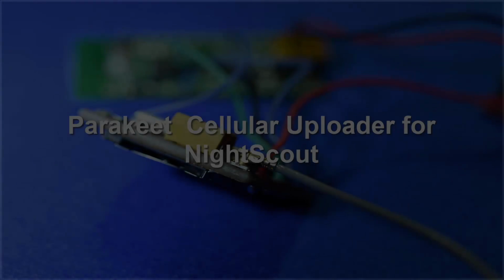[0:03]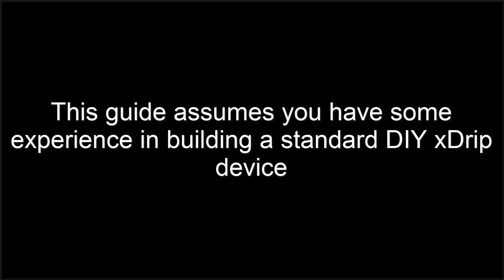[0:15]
In this video, we'll be making a Parakeet cellular uploader for NightScout. The guide assumes that you built an xDrip before and programmed the Wixel. The main resource page has everything you need, step-by-step instructions.
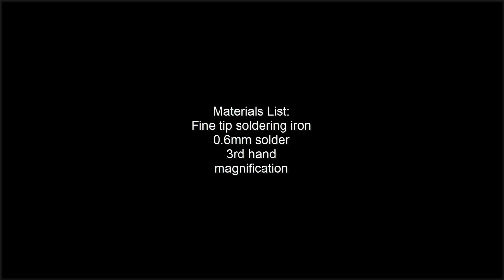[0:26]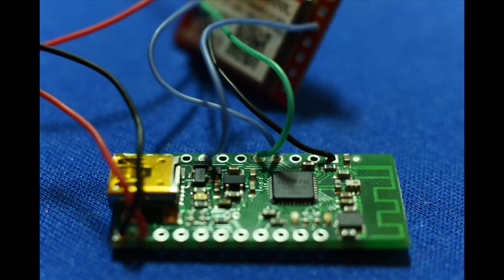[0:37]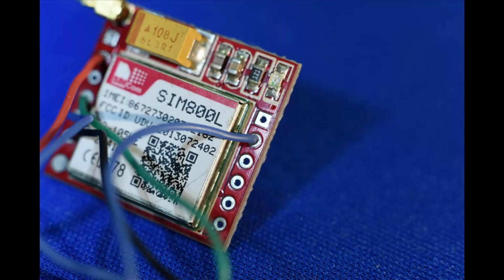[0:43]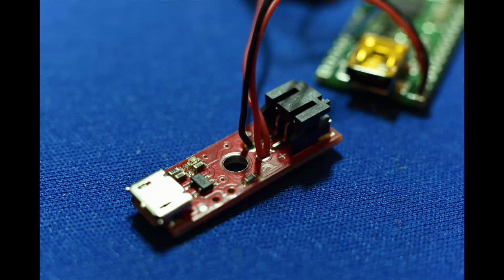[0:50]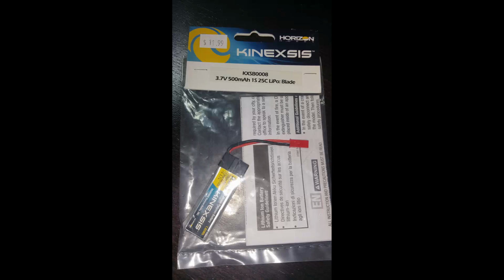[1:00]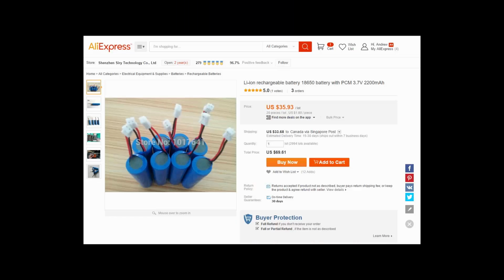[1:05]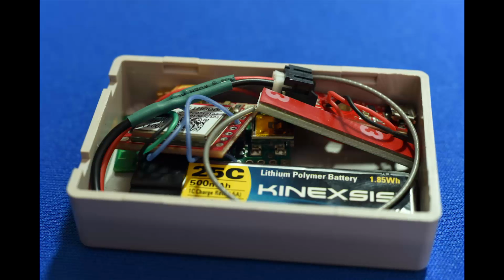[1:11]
You'll need all the soldering materials, as well as the parts of the Parakeet. And that includes the Wixel, the GSM module, which you can get from eBay, a LiPo charger, either from SparkFun, or you can use the one from Adafruit. Then you'll need a battery that can handle a 2-amp draw over the entire discharge cycle of the battery. The one I used is from a quadricopter, and we've also ordered others from AliExpress that are lithium ion. Then you'll need a box to put it in, tape it down or glue it down.
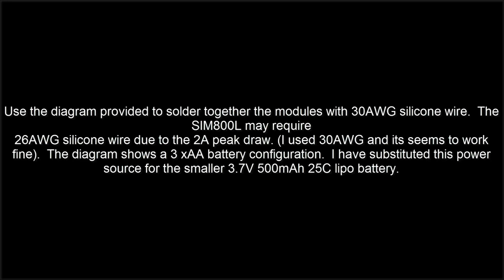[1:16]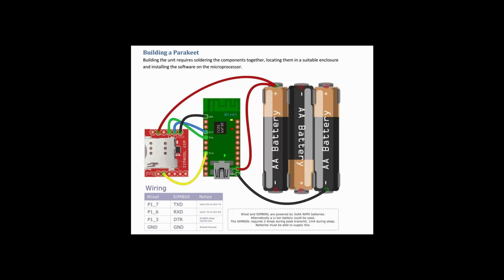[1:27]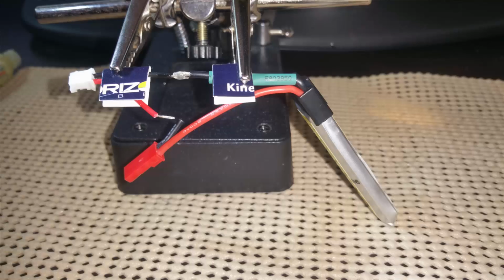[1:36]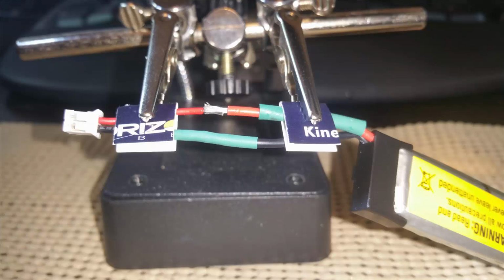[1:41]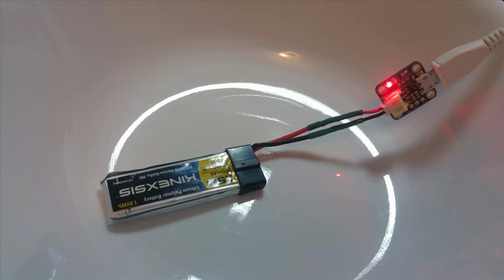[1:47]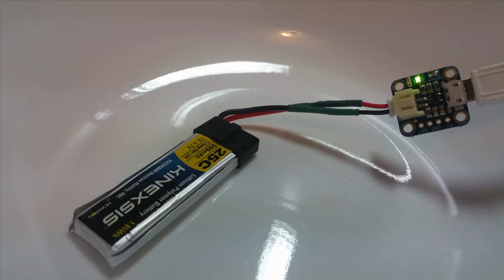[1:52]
Next, we're going to wire everything together using 30 gauge wire and solder it according to the diagram provided. When we do the battery, we want to splice the connections, but do one at a time, solder the connections, and have shrink wrap tubing to cover those connections so that nothing shorts out. After that, we want to test the battery by charging it in a fireproof area to make sure the battery doesn't heat up, or the wires, or the charger itself, and to see that it will charge up completely.
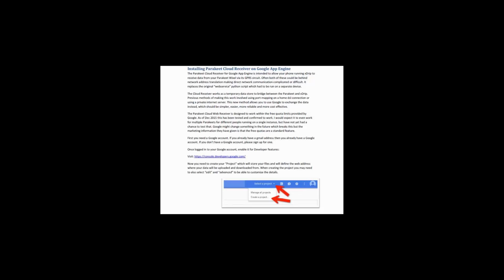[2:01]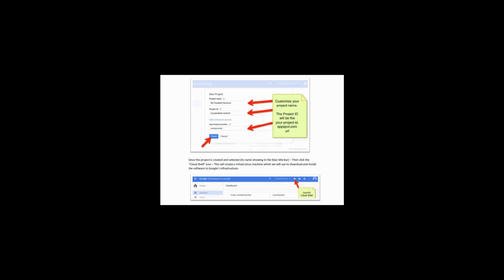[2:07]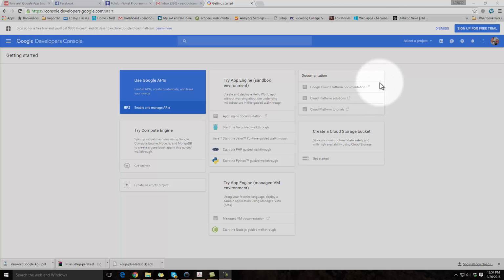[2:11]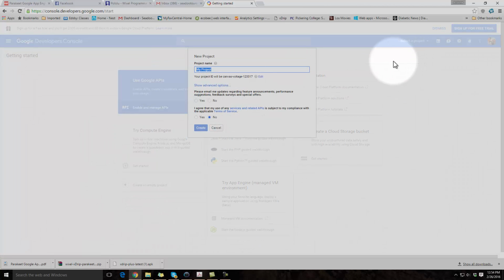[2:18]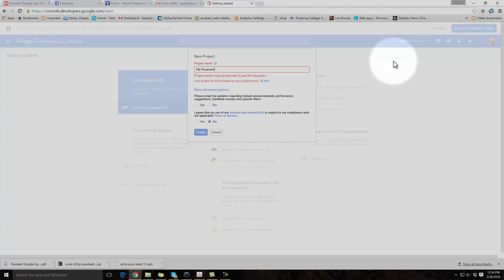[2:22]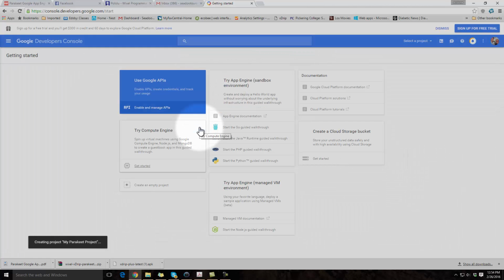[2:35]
Next up, we'll go back to the configuration pages to set up the cloud receiver on Google App Engine. Make sure you're signed into your Google account first. The cloud receiver works as a temporary data store to bridge between the Parakeet and the xDrip Plus app. Once you're in, you're going to create a project and give it a name. In this case, it's My Parakeet Project. You don't want the updates, and you do agree, and then create. After a few seconds, in the blue bar, you'll see My Parakeet Project show up.
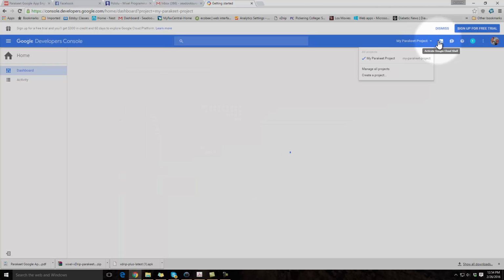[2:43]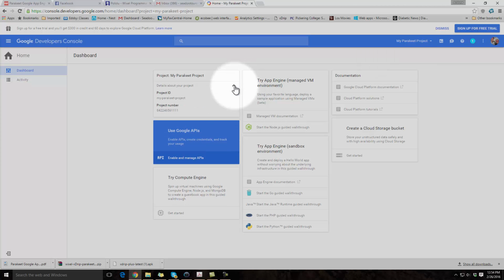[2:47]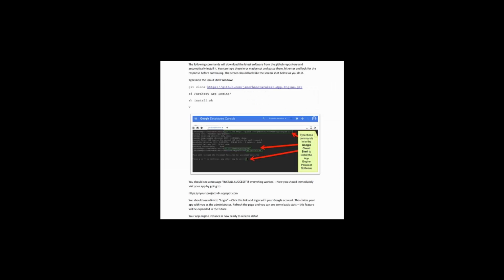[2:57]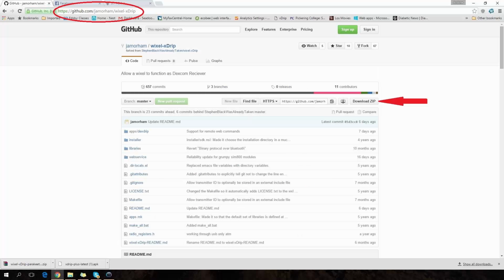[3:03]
Once that happens, you'll see when you come back over here that you'll have a project ID, my-parakeet-project. Next, you're going to click on the Cloud Shell icon, which will give you something like a command prompt. Just follow the instructions and wait for install success.
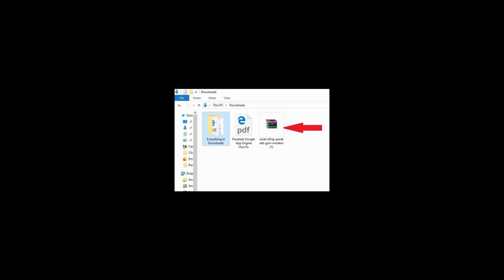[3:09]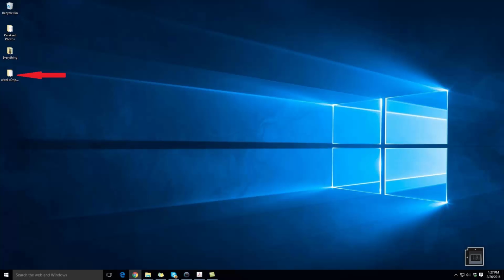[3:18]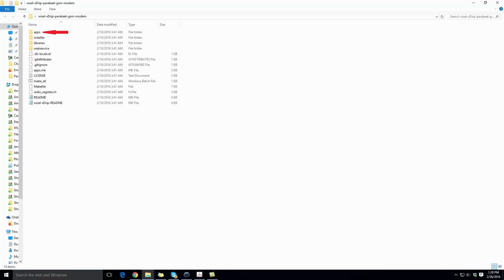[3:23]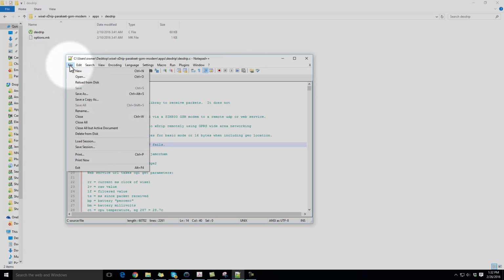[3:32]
Next up, we want to download the Wixel software. Once downloaded to your downloads folder, what we want to do is extract it using some extractor. I use WinRAR, and extract that to your desktop. When you double click on that, you'll see the apps folder, then dexdrip, and then the actual file we want to use, dexdrip.c. Use Notepad++, which was installed with the Wixel software, and you want to navigate to that particular folder and get that file. Once you open it, scroll down to the area where we can make our changes.
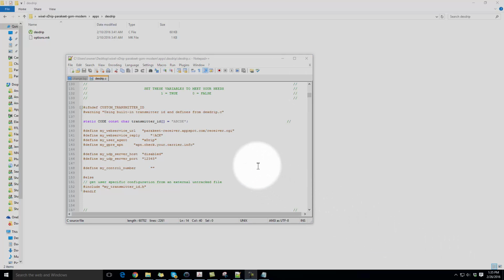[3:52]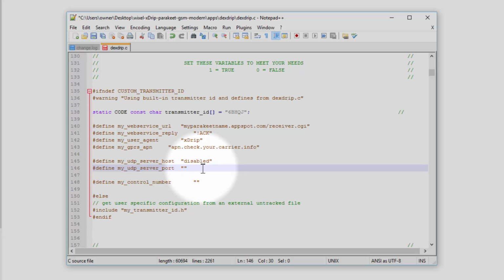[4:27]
This part should look very familiar. It's very similar to the xDrip software. We change our transmitter ID to whatever we're using at the time. Then next up, you want to use your project ID from your Google App Engine. And just replace that part. Then we'll go down and change the security code. Has to be 5 digits only, not 6. I use 54321.
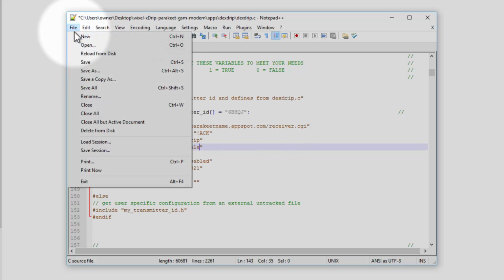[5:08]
Then you want to use the APN for your cellular carrier. In my case, I'm in Canada, we have to use Rogers. So Rogers has a big, long APN address. However, if you're using Ting in the States, theirs is much shorter, and it's wholesale. Lastly, click the save button and then you can exit.
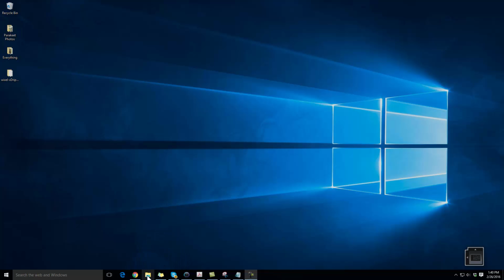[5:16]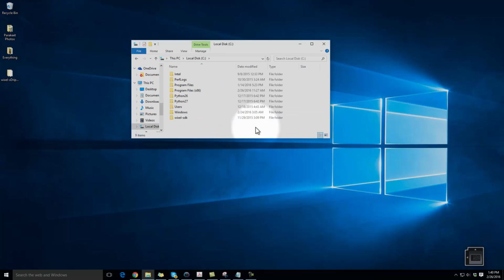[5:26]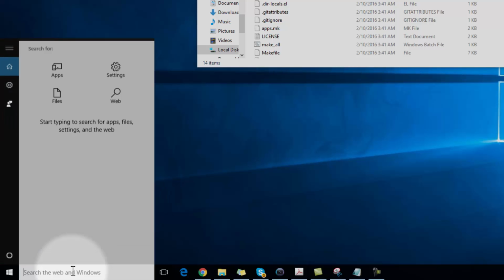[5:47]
The next thing we're going to do is navigate back to the xDrip folder. So what we do is we go down to My PC, then to the C drive, then to Users, then to Owner, then to Desktop, and then to the Wixel folder itself. We're going to need that for the next step as a path that we're going to follow. So go down to the search bar and type in CMD and click on Command Prompt.
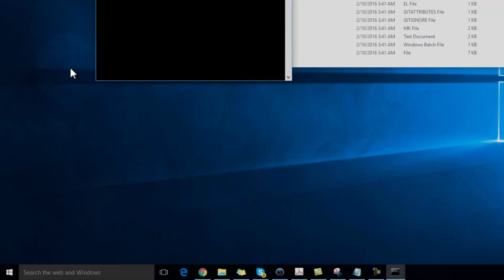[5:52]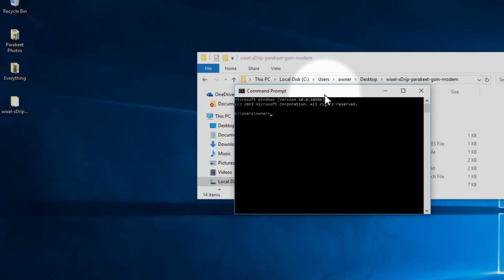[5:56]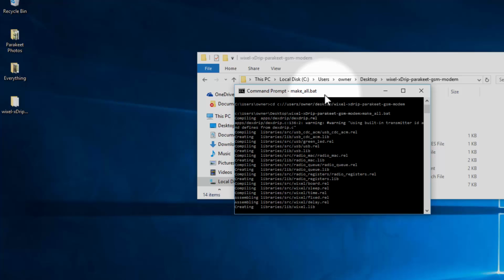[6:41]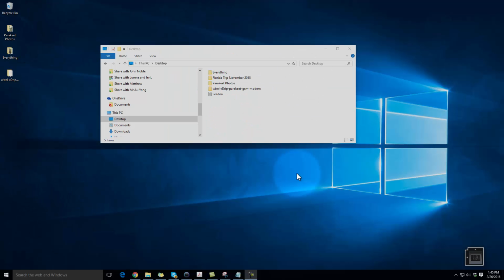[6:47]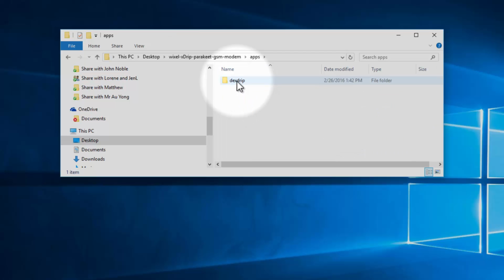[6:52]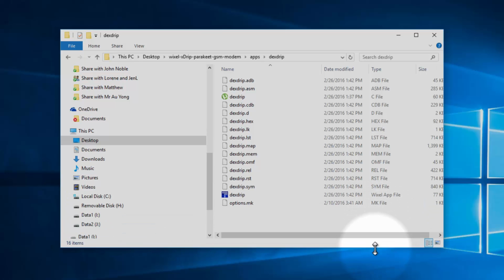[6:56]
In this command prompt, we want to navigate to the same folder by typing CD space C colon forward slash users forward slash owner forward slash desktop forward slash Wixel xDrip Parakeet GSM modem. Once all that's typed in, you want to hit enter, and that'll direct the focus to the folder that we want. The next thing we'll do is type make underscore all dot bat and hit enter. This will compile the code into a usable file that we'll write to the Wixel. Once that's done, you can close that window and you'll see that we've created a Wixel file with a blue icon.
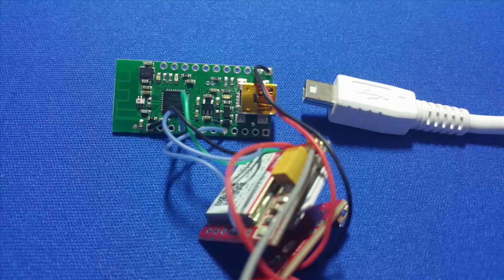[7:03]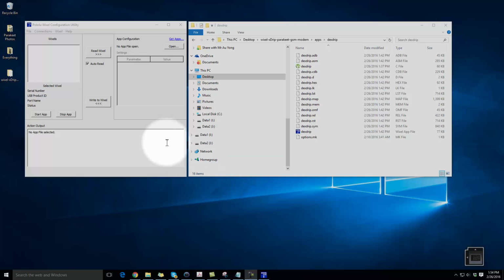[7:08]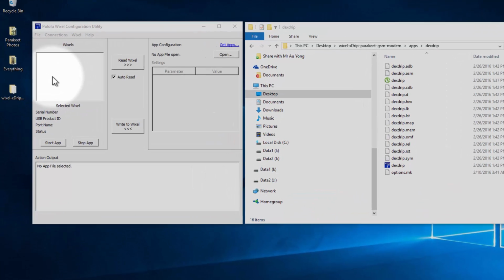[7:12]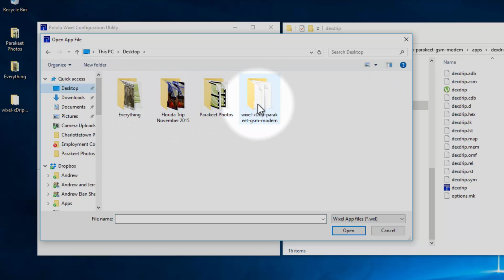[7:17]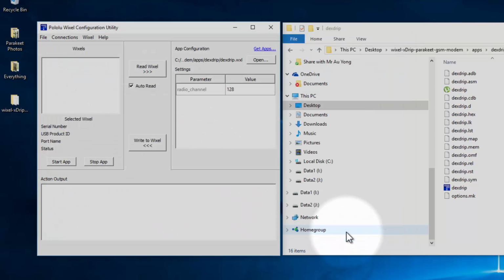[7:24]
Next up, we're going to plug in our Wixel, open up the Wixel configuration utility. It will appear in this area. I'm not going to do it this time, but then you open, navigate to the file we just created with the blue icon, hit open, and then write to Wixel. Your Wixel will flash and show success.
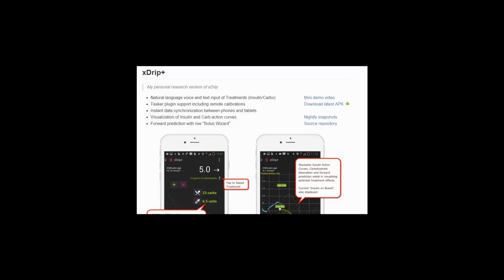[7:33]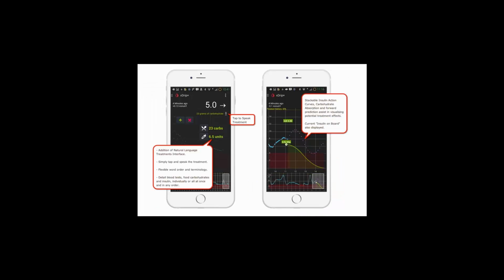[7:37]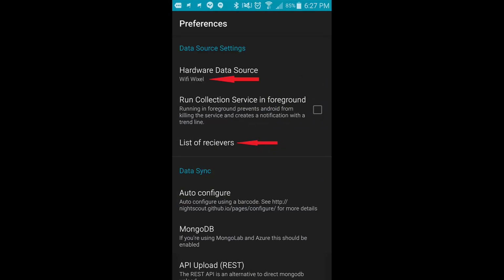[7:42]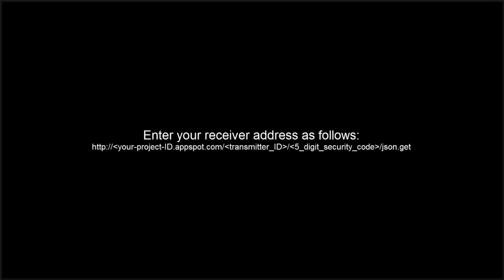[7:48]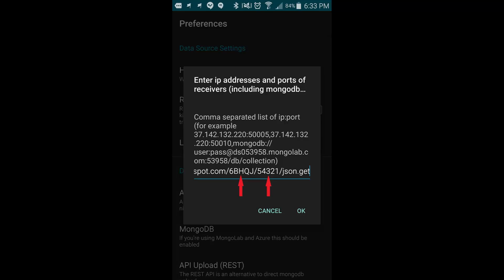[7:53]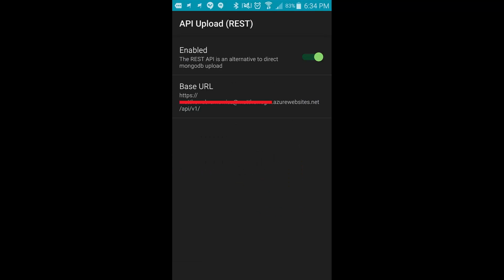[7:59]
Next up is to install the xDrip Plus app using the latest APK. Once that's done, go to your settings, and as a hardware source, you want to select the Wi-Fi Wixel. Then go down to the list of receivers and enter in the string exactly as you see it, including your transmitter ID and your 5-digit security code. Next up, you want to use the REST API string just like you did in the xDrip app previously.
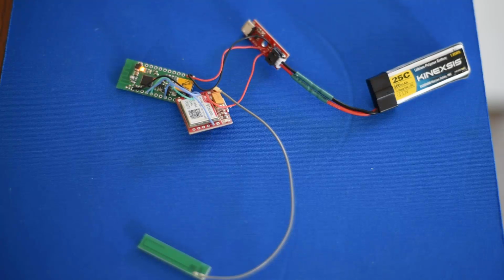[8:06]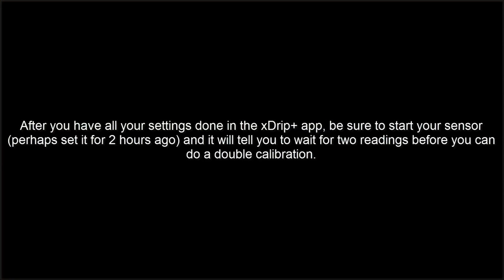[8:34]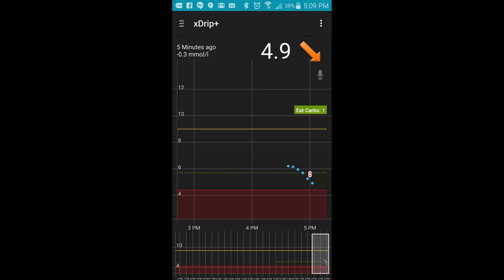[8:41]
Now to test things. Once plugged in, the yellow light will flash on the Wixel waiting for a signal from the transmitter. Once received, things will go red. They flash back and forth between the Wixel and the GSM module trying to transmit. Once there's success, you'll see that the Wixel will change from red to a solid yellow color for a few seconds, and then it'll go out waiting for the next signal. At this point, make sure you have started your sensor and now wait for signals. And then success.
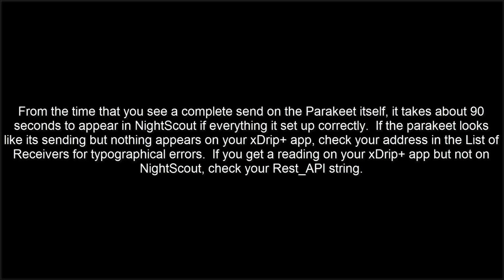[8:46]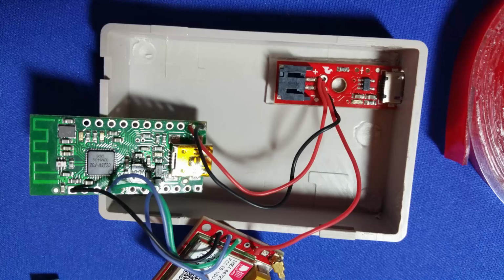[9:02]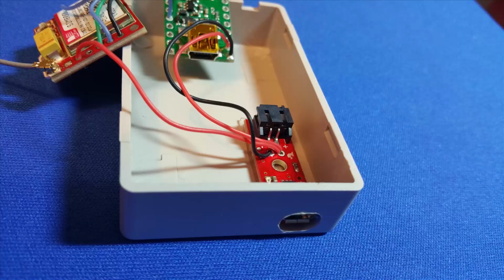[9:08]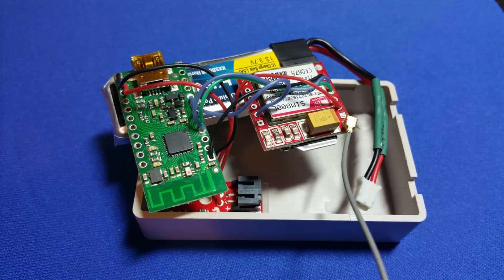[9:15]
It usually takes about 90 seconds to appear on NightScout if everything is set up correctly. If it doesn't, check your strings. It's always the strings. Once that's done, you can put your parakeet together in the box using double-sided tape. What I did is I glued my charger down through a little hole that I drilled and then glued it down to the bottom to be secure. Then I glued the Wixel and the GSM module to the battery so it could be easily removed if I have to. Lastly, put the top on it and start charging.
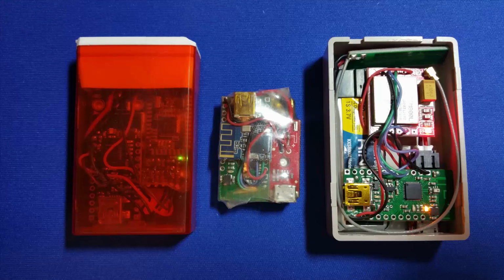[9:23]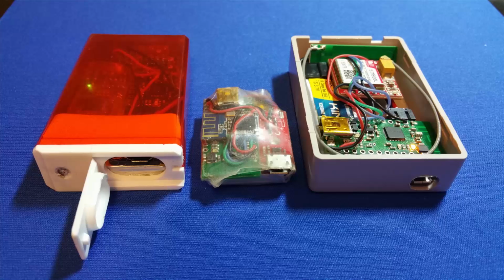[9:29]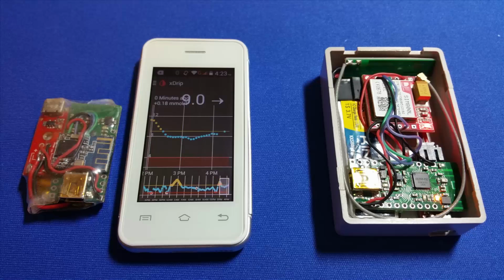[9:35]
I built the original xDrip last January and then built a smaller version and now the Parakeet. I used the small version of the xDrip with the Melrose phone and now the Parakeet with my phone.